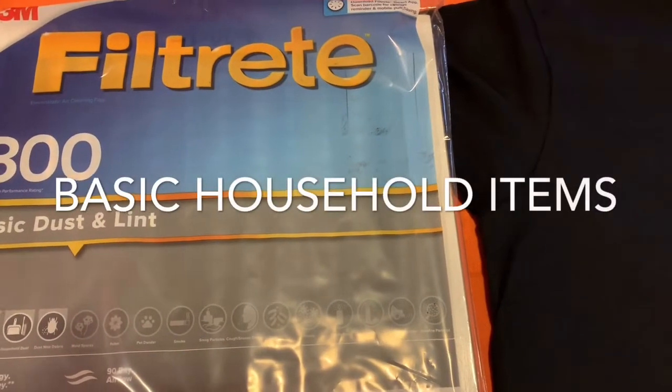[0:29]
All right, this is what I need you to do. I need you to put your hands in the air and wave like you just don't care. Bruno's vlog 24K, y'all. I just made a joke. Just letting you know that it's no joke.
I am bundled up here. I'm not the usual self. I got a mask on, but it's not doing anything. Just making me feel better. So I'm going to make my own facial mask because of this coronavirus thing. Stay tuned. So folks, some of these items I found right here in my own house.
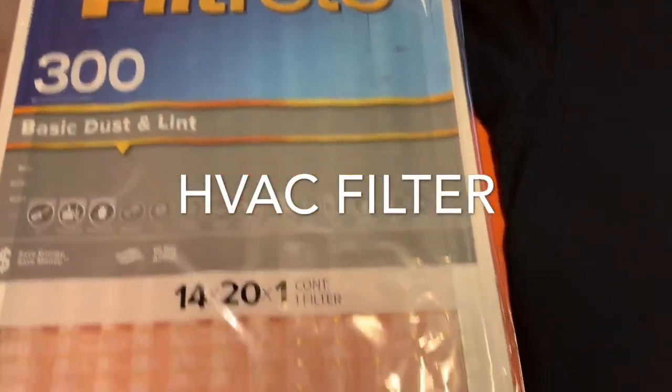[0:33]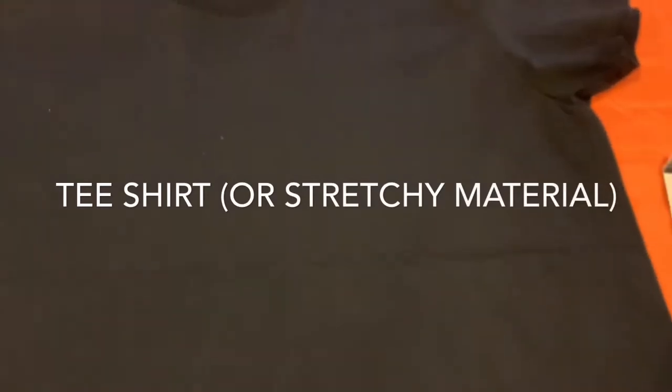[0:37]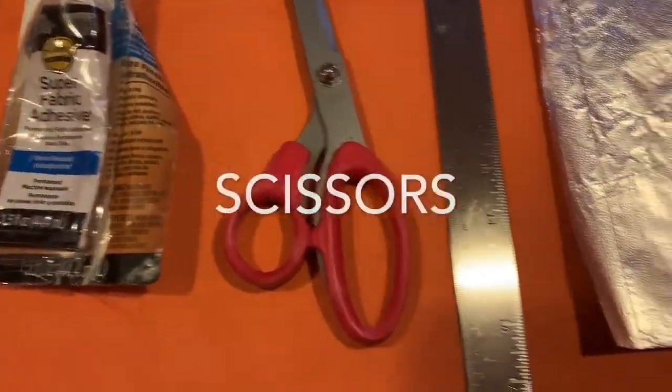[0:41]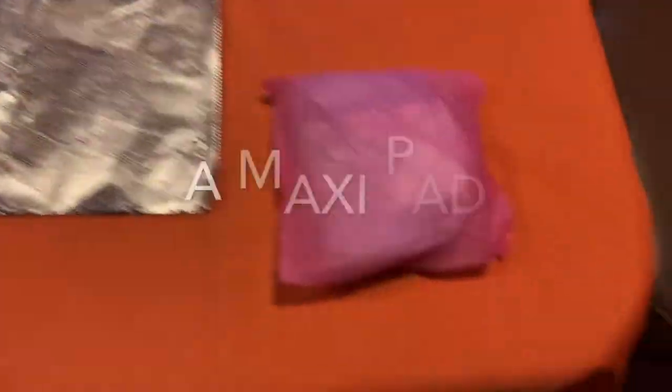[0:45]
These are household items that you'll need. An HVAC filter. Something stretchy material, like this, a regular old t-shirt. I got some fabric glue. I got a pair of scissors, a ruler, aluminum foil, and a maxi pad.
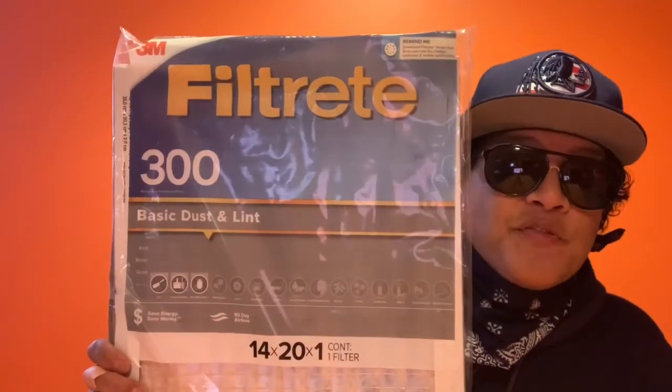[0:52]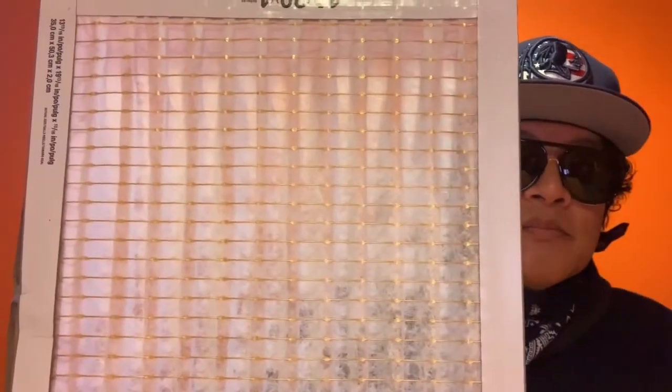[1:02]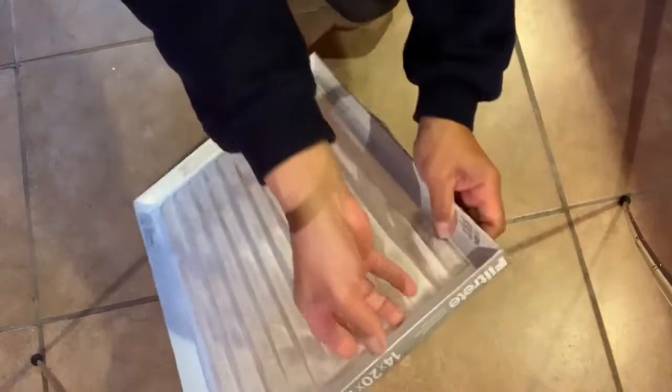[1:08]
So what we're gonna do first, we're gonna take this HVAC filter. This cost me just about $6 at a regular grocery store. They actually had it. Okay, here's the filter. All right, so I had to get on the floor. This is what we're gonna do, y'all. We're gonna take this filter and we're gonna take it out of the little casing that it's in.
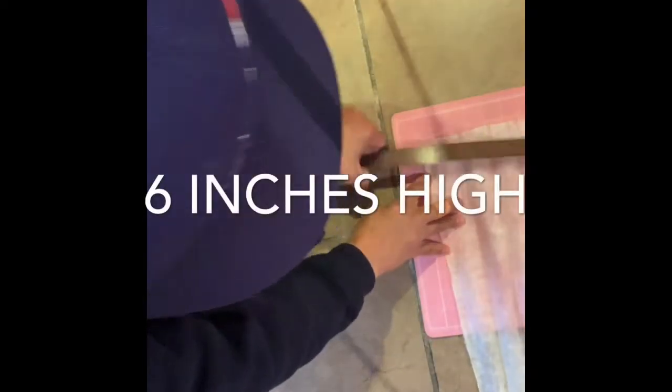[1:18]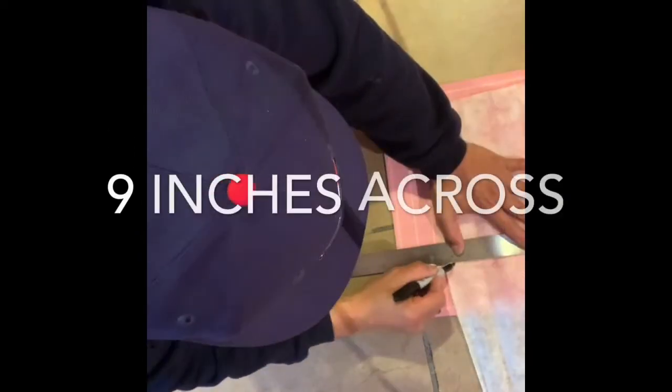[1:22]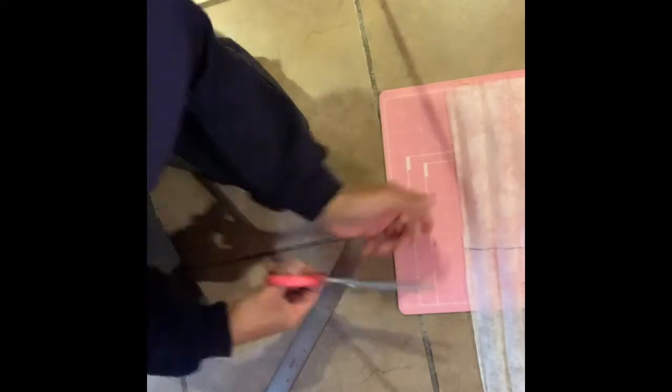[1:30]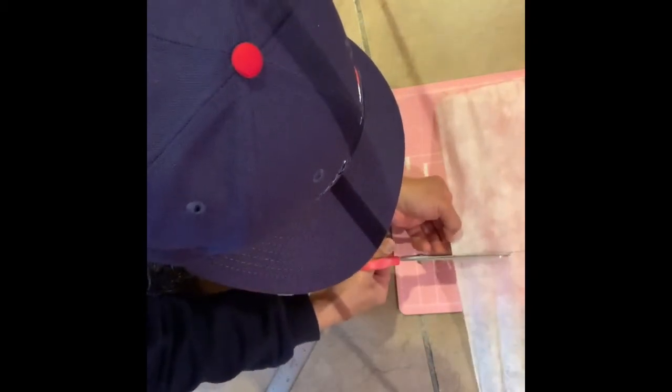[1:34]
All right, y'all, cutting out those little ties right here is taking too long, so I'm gonna just get to the point. I'm gonna turn on this backside and I'm gonna measure 6 inches up and 9 inches across. Okay, what I'm gonna do now, folks, I'm gonna cut this with my scissors.
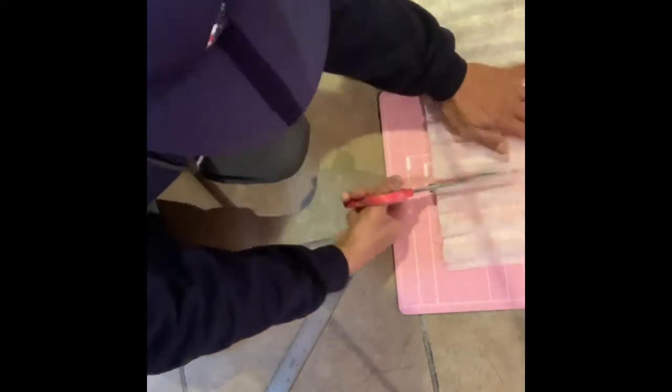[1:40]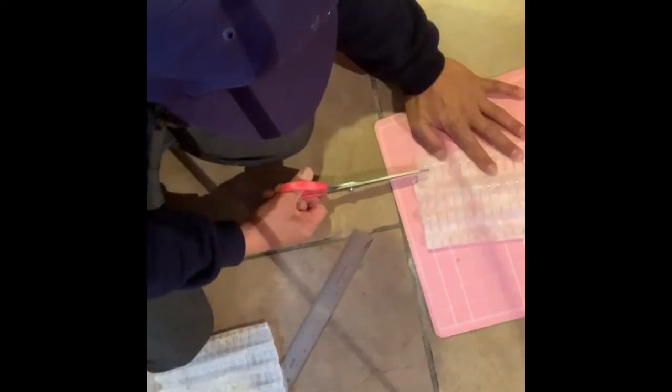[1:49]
Okay, you see these little nubby things? These little plastic ties? I'm just gonna cut those out. Okay, folks, here's the piece of the filter that I cut out. And what I'm gonna do, I'm just gonna fold it just like an accordion. And I'm gonna take a rubber band and seal it off at one end. I'm gonna take another rubber band and seal off the other end.
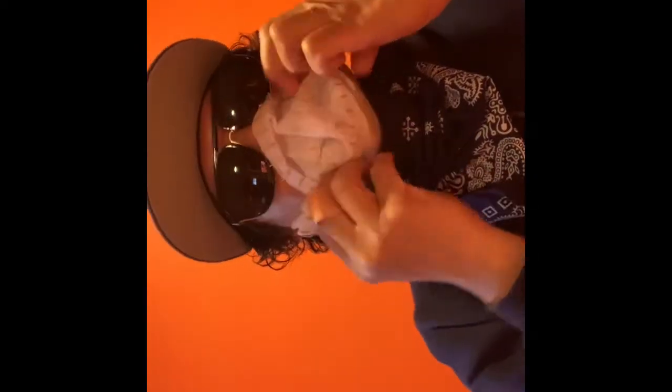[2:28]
Okay, this is what we have. You're gonna take this and open it up. It's gonna fit around my face just like this. See that? To all you guys out there, here's the fun part. You get to take a maxi pad. You're gonna take the maxi pad and you're gonna open it up, if you know how.
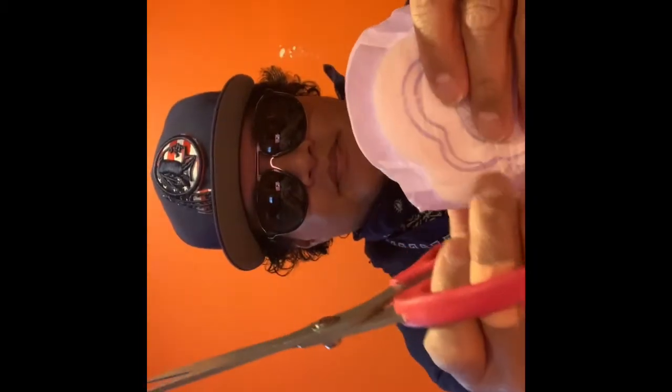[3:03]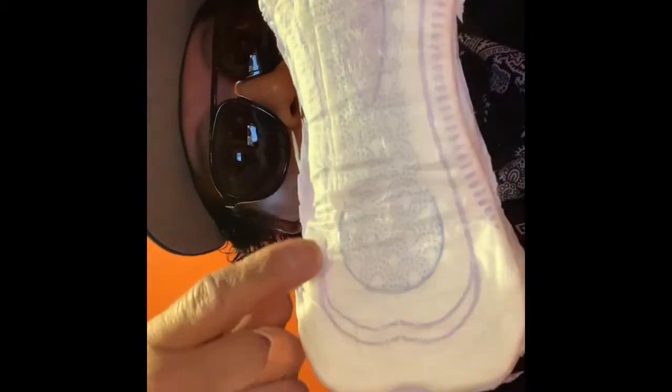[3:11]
All right, here's a maxi pad. You're gonna take the maxi pad and you cut off all these extra edges right here. See these edges right here? Just go ahead and cut it off. Okay, just to let you guys know, this is an extra big maxi pad. So I'm gonna cut a little bit more, like right around this purple line you see here. It doesn't have to be perfect. I'm just gonna try to make it smaller.
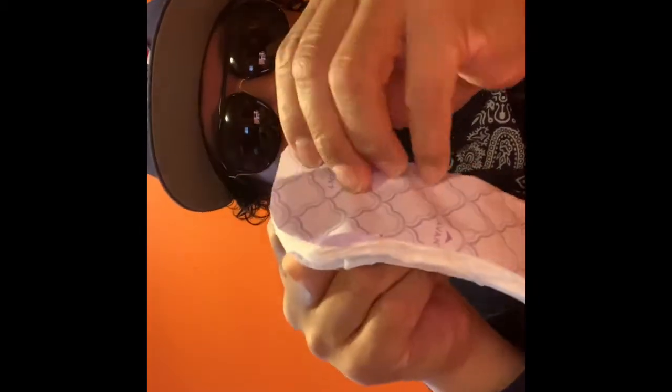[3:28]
Okay, I cut around the pad. And now you're gonna take off the little adhesive strip, just like that, fold in half. And you're gonna stick it right inside the mask, just like this. And as you can see, it's starting to form. And this is where you're gonna have your mouth at. For protection, you're gonna have your mouth right inside the pad.
When you're done, guys, it's gonna look just like this. There you go. I can breathe, hardly, but at least I'm not breathing in any bad particles. And now what we're gonna do, we're gonna put this into our material. So for my material, y'all, I got this t-shirt. It's just a plain black t-shirt. 2XL, yeah, Bruno used to be fat.
Not anymore, baby. So I'm gonna cut this up and I'm gonna show you how I'm gonna attach the mask into the t-shirt or material.
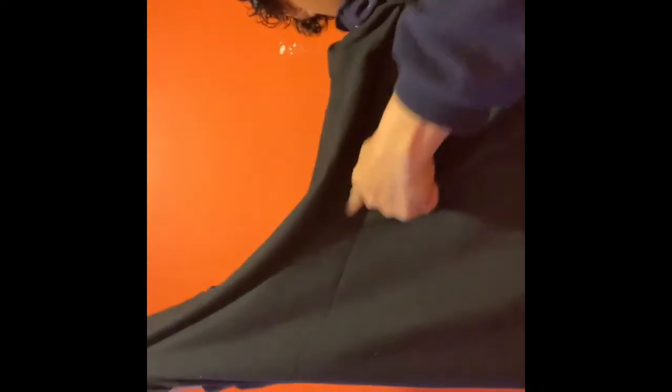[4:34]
First of all, I'm gonna take it like this and I'm gonna cut it right where I folded. See this little line here? You can't see it. It's a line right here. All I do is fold the shirt in half and I'm gonna cut it. It's gonna make like a half t-shirt.
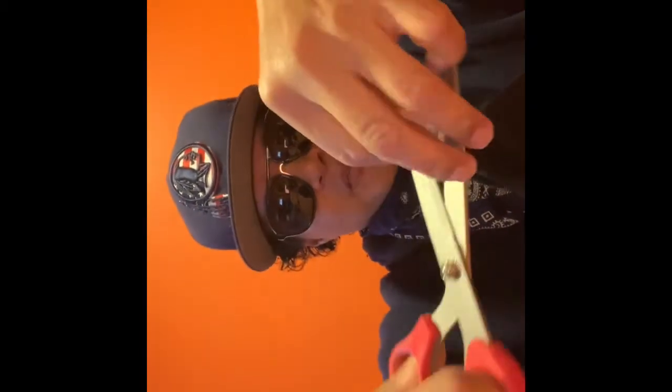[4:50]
All right, here's the bottom of the t-shirt. I don't need this anymore. I'm gonna use the top half of the t-shirt. Looks like this. And we're gonna cut these tags off because that's gonna be where my face is at.
So what I'm gonna do now, this is front and back. I'm just gonna cut so I'll have two pieces. I can cut it right down the shoulder. It's gonna make one piece.
Okay, y'all, I got the t-shirt right here, and it's gonna actually fit around my face, just like this. But I'm gonna attach the mask to it. So this maxi pad mask is gonna go over my face. It's gonna go inside, see? It's gonna go inside the t-shirt. Just like that.
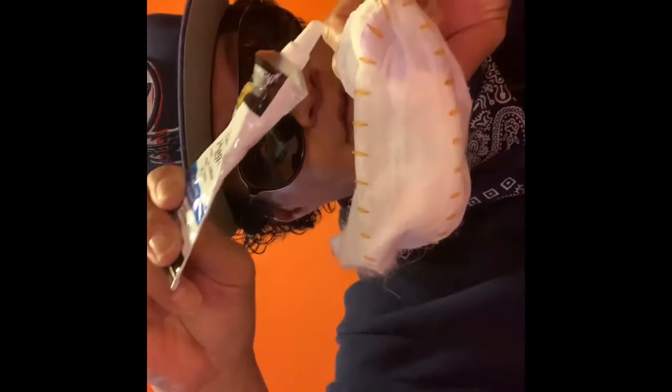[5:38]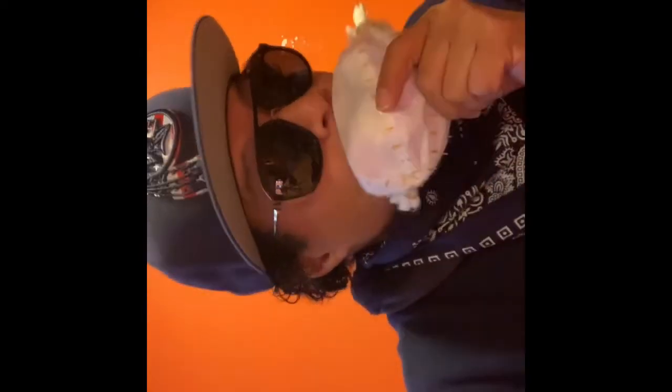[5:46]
So what I'm gonna do, I'm gonna take this super fabric adhesive and we're gonna put it on the front edges, the front top edges of the mask. So it looks like this. I'm gonna put it right up in this area. But I'm not gonna glue it to my mustache. I don't have a mustache. I'm gonna glue it to my shirt. So what I'm doing, guys, I just glued it to the top of the mask. I glued the top end and I'm gonna let it dry.
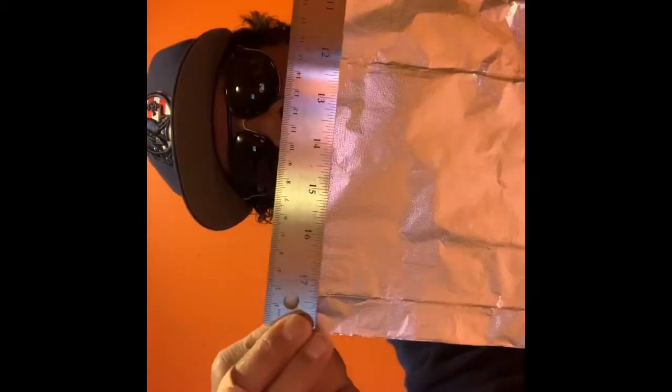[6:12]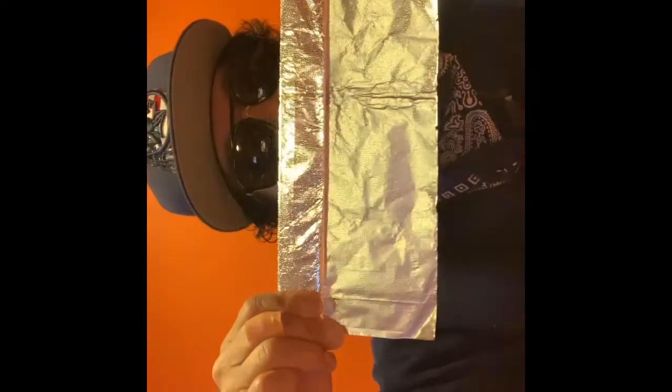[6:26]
Now I'm gonna take the glue and I'm gonna do the bottom half of the mask. And my ruler, and I'm gonna fold the ruler inside just to give it a nice little strip, like a 1-inch strip. Almost like this. I'm just gonna keep turning it. Keep turning it. And keep turning it. And eventually take my ruler out and have a strip of aluminum foil.
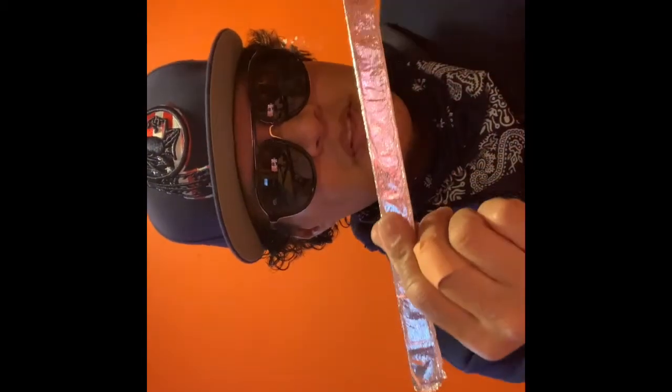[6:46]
1-inch. So I have an aluminum foil like this. I'm gonna fold it one more time to make it a 1/2 inch. Almost like this, almost like a chewing gum. You ever get your Wrigley's chewing gum, you still have the little wrapper? Almost like that. So I'm gonna take my foil and I'm gonna put it inside the mask where my nose and my mouth is going. And it's sort of gonna be like this. So when I do this, it'll give it a little bit more shape to it.
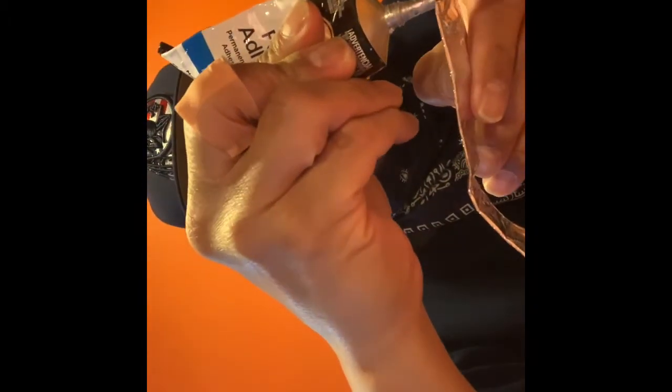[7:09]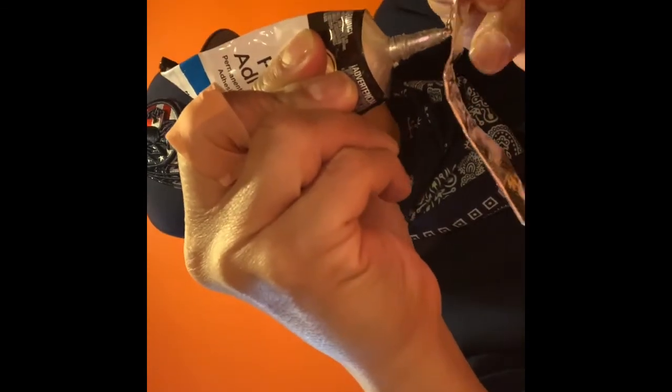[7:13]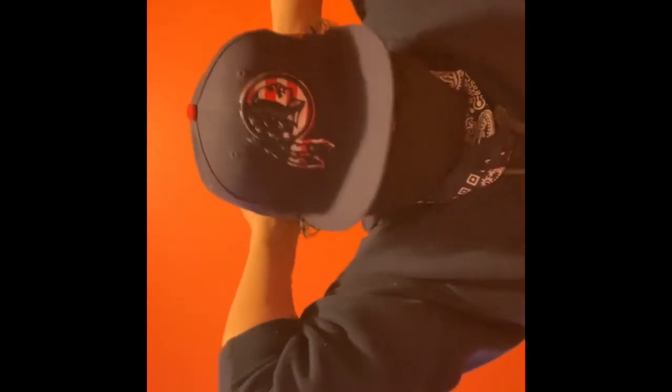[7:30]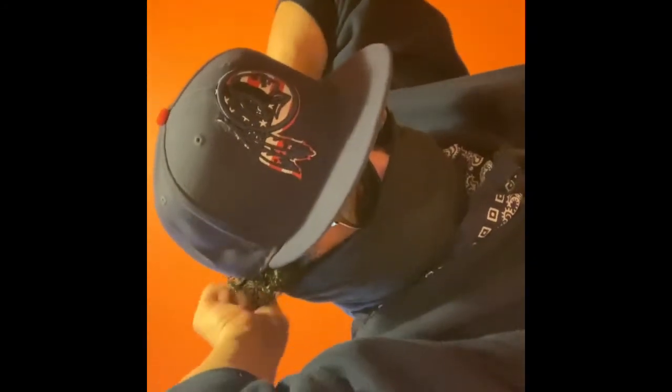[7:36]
So after I glue the inside, I'm just gonna let it dry for a little bit. I'll be back. So here's the big reveal, y'all. Ta-da! I'm gonna put this mask on. It smells like adhesive. It's gonna tie it in the back. Notice I tie it underneath my ear. And it has a really good tight fit in the front.
So I know it looks crazy. I look like a gunman, but I feel safe. Hope when people see this, they know that I'm trying to protect myself and protect them from any germs that I may spray. Can breathe better, but it's homemade. And oh well, I didn't have anything else to do, so I might as well just make one. And that's it. The mask.
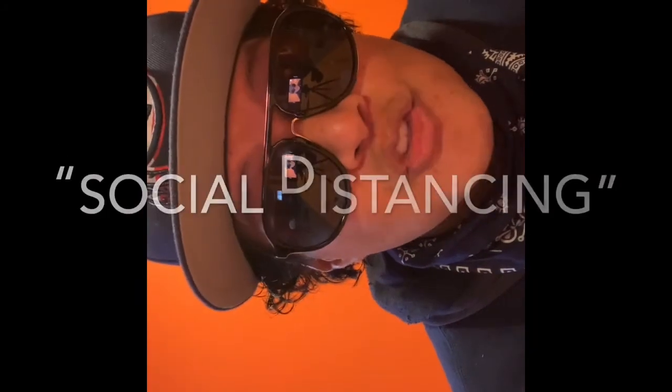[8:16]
Hope you guys enjoyed this. I didn't. But I want everybody out there to be safe. Think about other people. Try to practice social distancing. In the U.S., that means try to keep 6 feet away from the person next to you. If you can't do that, folks, don't know what to say. Make sure you take care of your senior citizens. Make sure you take care of the little ones that you may have around you. Most of all, take care of yourself.